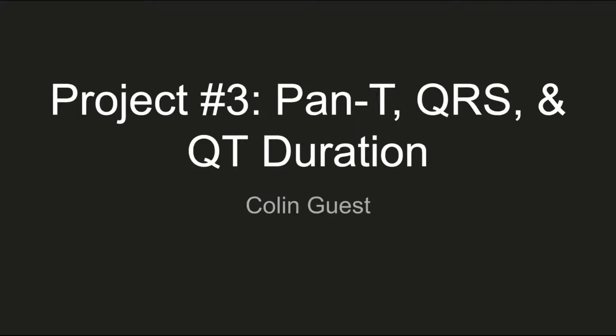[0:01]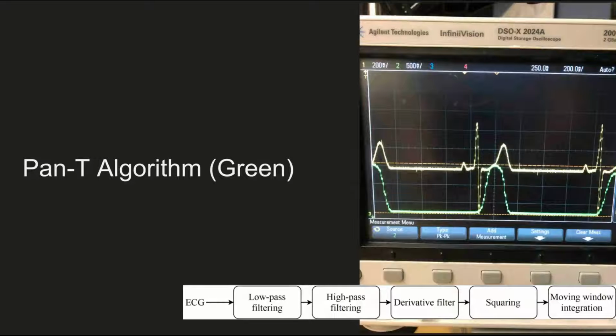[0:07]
Hey everyone, I'm going to show you my approach to finding the QT duration for project 3. So I use the Pan-Tompkins algorithm, which is something that I'm sure we're all very familiar with at this point. So in the screen on the right, I'm sure you remember the ECG simulator and the moving window integrator, which is the result of the Pan-T algorithm. And I use the moving window integrator extensively in finding the QT duration.
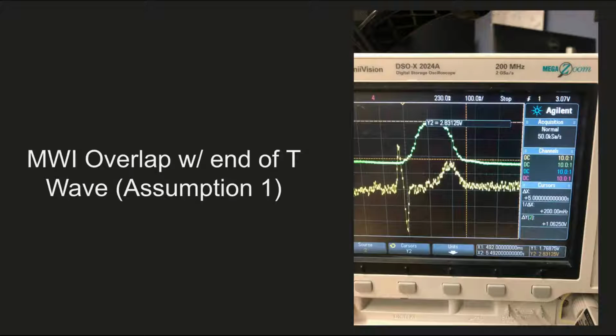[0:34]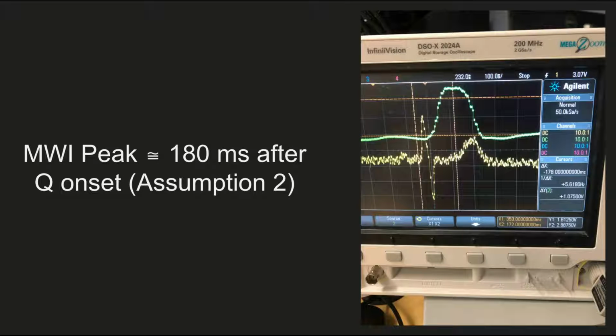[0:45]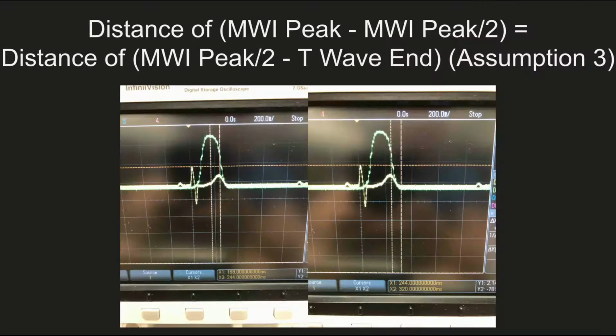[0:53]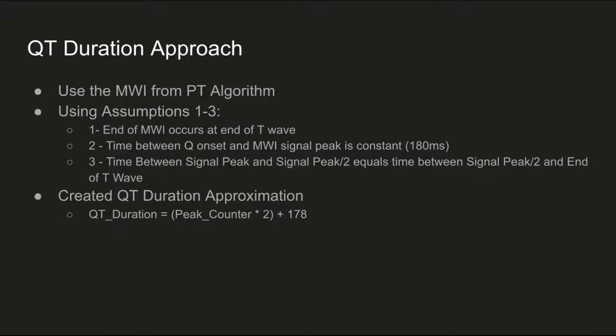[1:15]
I'll show you the assumptions I made right now. So the first assumption was that the end of the T wave and the end of the MWI overlapped, as you can see in this picture on the right. My second assumption was that the Q onset was 180 milliseconds before the peak of the MWI. And my last assumption was that the peak of the MWI minus half the peak of the MWI peak in time was equal to the distance between half of the MWI peak and the end of the T wave in time. So this is my approach to finding the QT duration.
Using assumptions 1 through 3, I made the approximation at the bottom with the equation QT duration equals peak counter times 2, so that's using assumptions 1 and 3. And then you add 178 at the end using assumption 2.
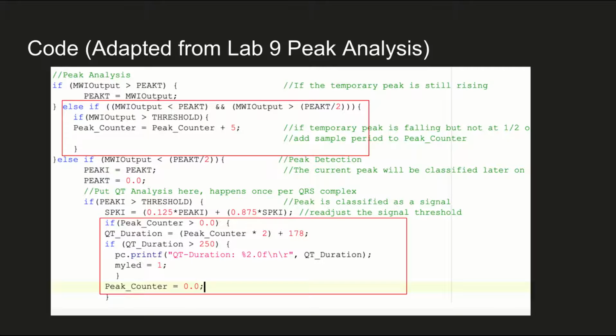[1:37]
And here's just the code that I used. It's adapted from the peak analysis from Lab 9. In this else if statement, this is just after a possible peak has been evaluated and before it reaches half of its value. And I start the peak counter only if the MWI output is above the threshold that's calculated later on.
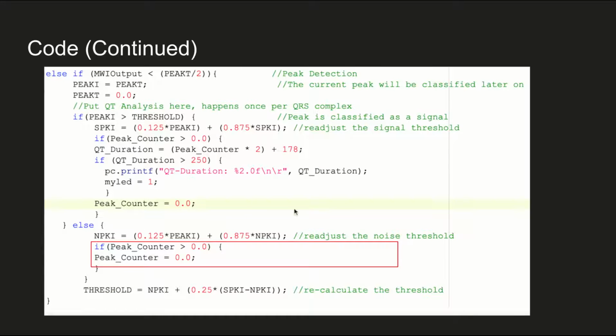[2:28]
So that ensures that I'm actually looking at a signal instead of noise. Then below, I just do the peak counter calculation. I set it to 0 after we do all these calculations, and I light up the LED. And here's just the end of the code. This is just a little box right here to make sure that no noise is getting counted for the peak counter.
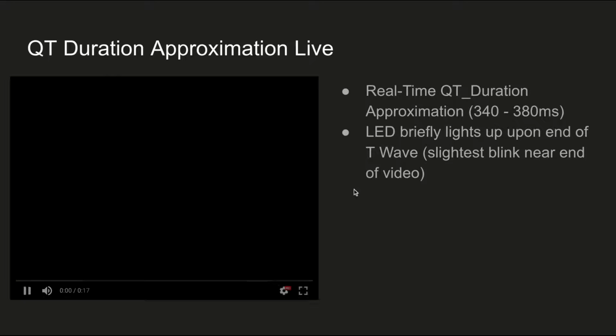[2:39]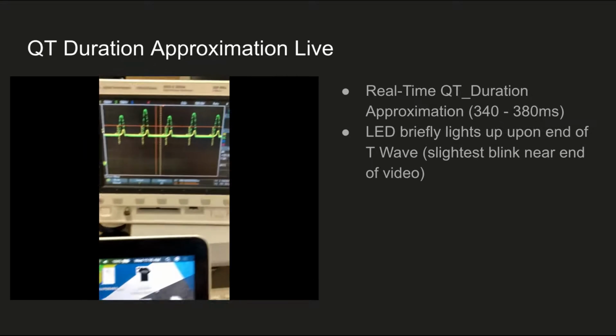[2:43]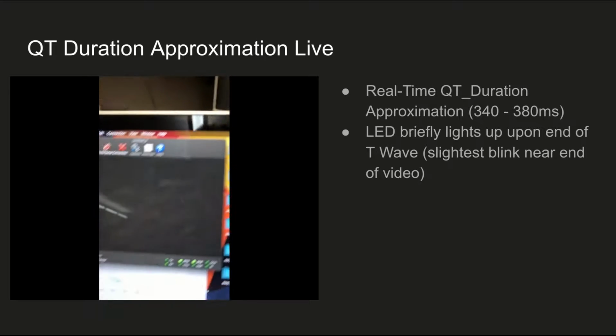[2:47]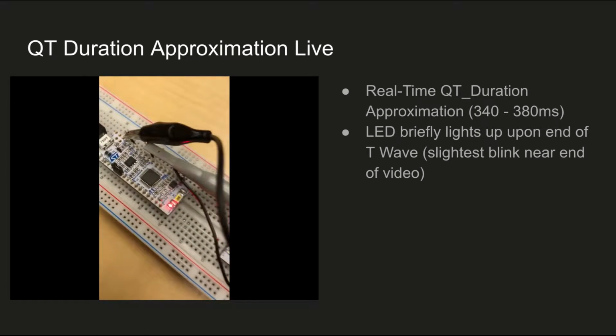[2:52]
And right here is a video of my live QT duration using the chicken heart. So that's the real-time QT, and here we'll see the blink, right? Oh, I must have missed it. Okay. Well, if you guys want to watch it again, I can download my slides as well.
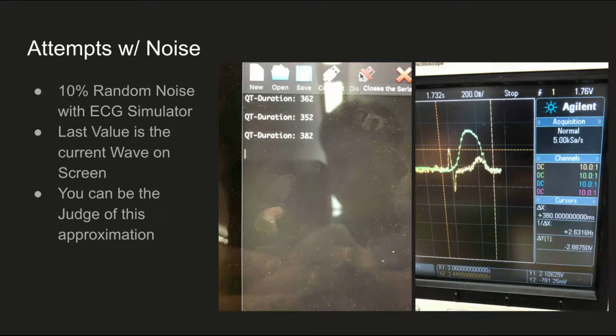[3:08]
So I had a couple of attempts with noise using 10% random noise with the ECG simulator. And the last value on the first image, the QT duration equaling 382 milliseconds, corresponds to the wave on the right. And I have the cursors set so they equal 380 milliseconds. So you can be the judge of how good this is with noise, but I think it's pretty good.
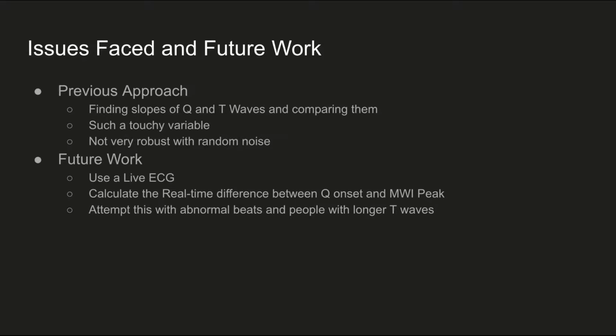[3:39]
And lastly, these are the issues I faced and where I think the future work can go. So my previous approach was trying to find the slopes of the Q and T waves, which looked more accurate on paper, but it's actually a pretty touchy variable and not very robust with noise. But in future work, I would like to use a live ECG, something I didn't do this time.
I'd like to calculate the real-time difference between the Q onset and the MWI peak because it's just an assumption and there is variation between those two. And I'd like to attempt this with abnormal beats in people with longer T waves to see if there's any differences in the MWI peak ending, kind of getting at assumption 1 right there.